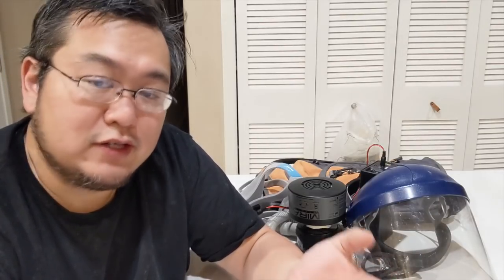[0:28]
Hi, my name is Johnny Lee, and a few days ago I posted a video about building a low-cost prototype ventilator. And I appreciate everyone's feedback that I've been able to talk to, who helped me learn a lot more about what's involved in mechanical ventilation. And I've updated the GitHub link with a lot of those learnings.
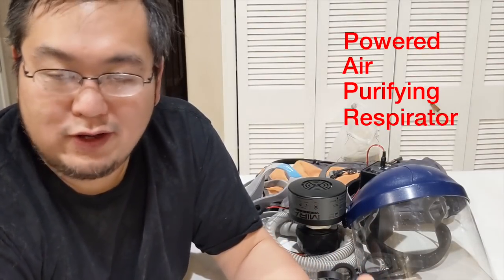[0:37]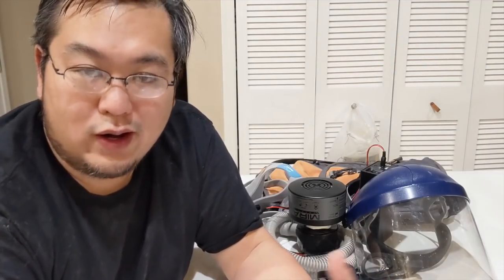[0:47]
While the efforts to make that project better continue, I wanted to share a different application of pretty much the exact same parts that could be useful right away, less risky, and potentially much, much more valuable than a mediocre ventilator. And that's to build what's called a powered air-purifying respirator, or PAPR. PAPRs are actually advanced pieces of personal protective equipment, or PPEs, that's designed to be worn by healthy individuals such as yourself or a caregiver.
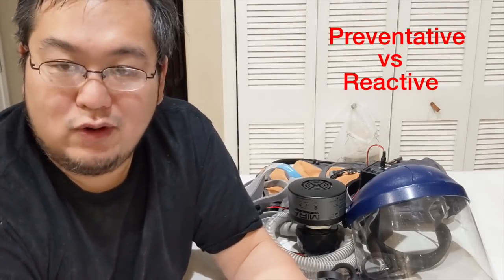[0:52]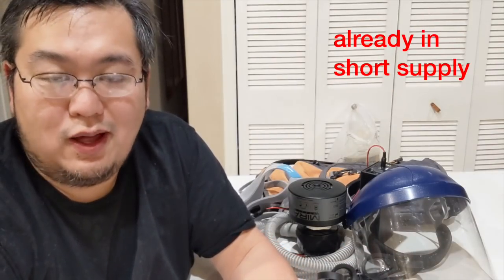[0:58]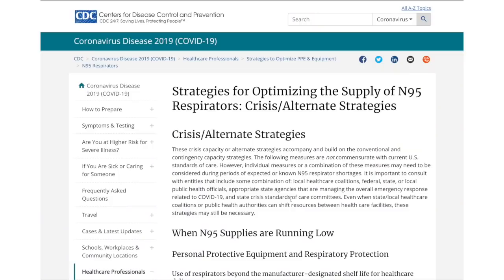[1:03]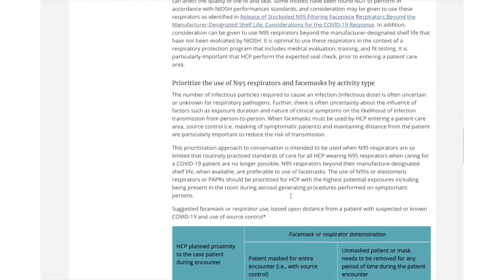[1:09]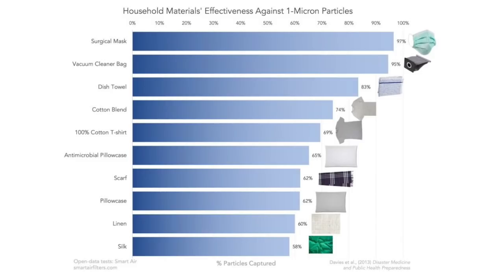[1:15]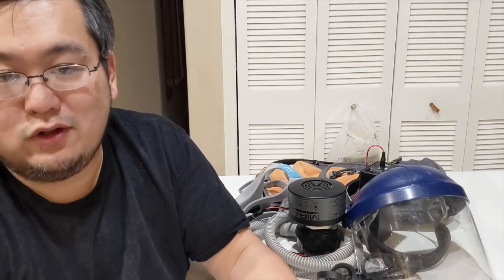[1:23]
PAPRs are actually preventative pieces of equipment rather than reactive ones, so we actually reduce the spread of the disease upfront. Protective equipment like this is already in short supply. We don't have to wait until hospitals are overrun with people needing ventilators. The CDC's website on crisis and alternate strategies for what to do when things like N95 masks run out references a study that talks about the effectiveness of materials like towels, t-shirts, and scarves on how well they act as a respirator. Ultimately, if you're able to help a caregiver heal 10 people that they otherwise couldn't treat, you'd have a much higher level of impact over people's lives than building a mediocre ventilator for just one person.
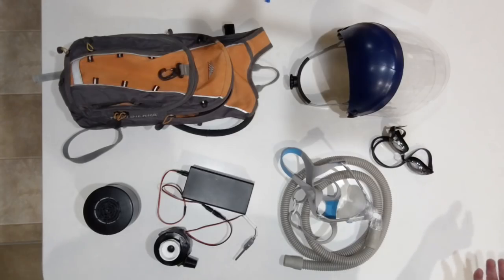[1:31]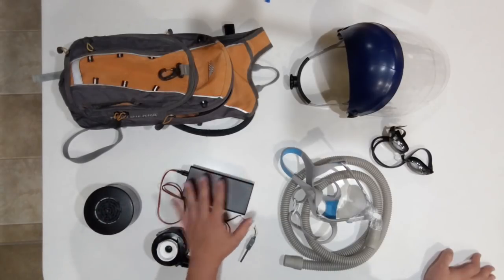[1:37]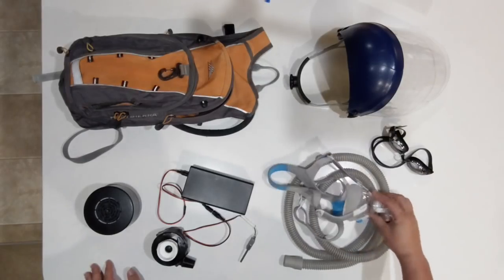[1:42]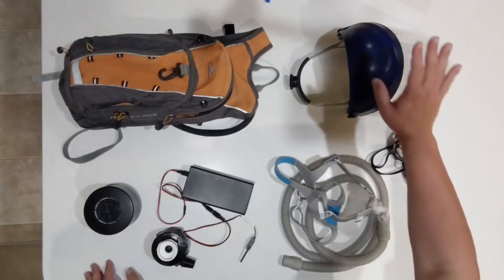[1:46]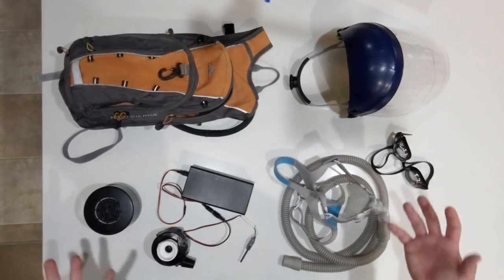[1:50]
These are the components I'm using for the DIY PAPR. This is a blower from the ventilator project. This is an air filter, a battery for the blower, a full face mask from a CPAP with its breathing tube, a pair of swimming goggles for eye protection, a face shield, and a backpack to carry everything so I can have my hands free.
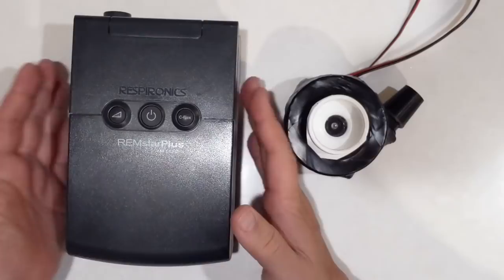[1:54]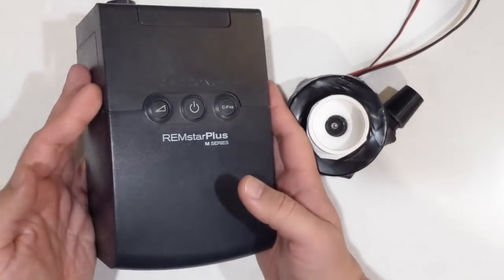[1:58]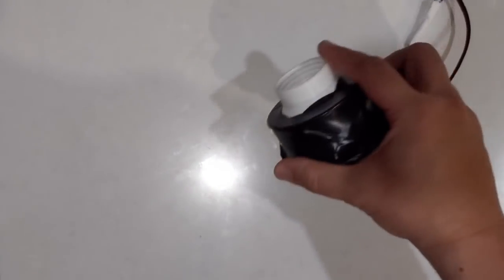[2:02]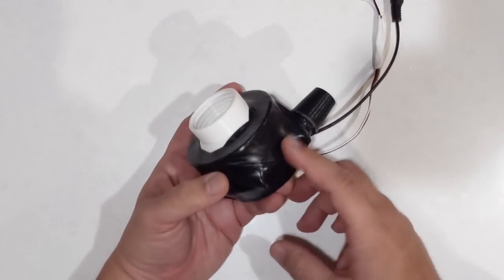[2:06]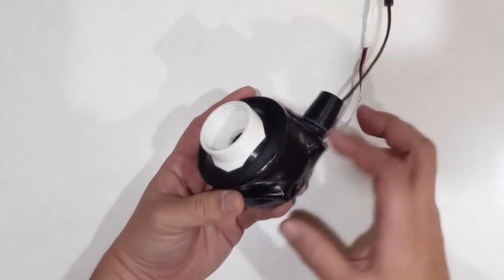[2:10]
The blower, as I mentioned in the previous video, is just from inside an old CPAP that I had. And CPAPs are pretty common devices used by people to treat sleep apnea. And it turns out the blowers are simply just brushless DC motors that can be easily driven by an Arduino Mini and an electronic speed controller commonly used in quad rotors and RC cars.
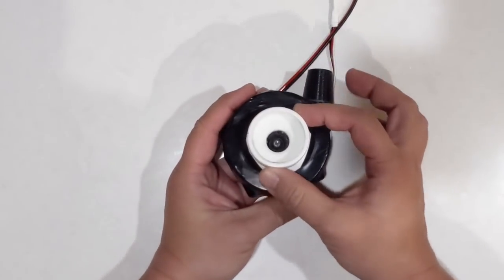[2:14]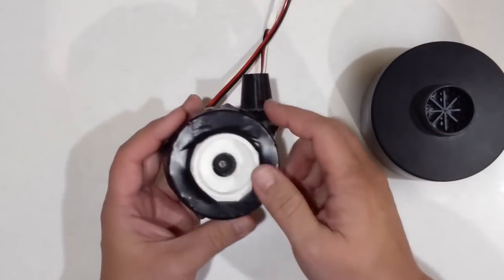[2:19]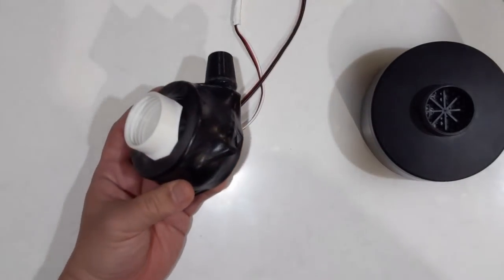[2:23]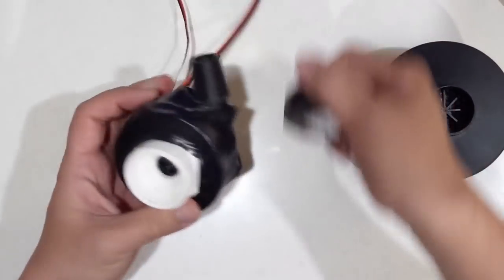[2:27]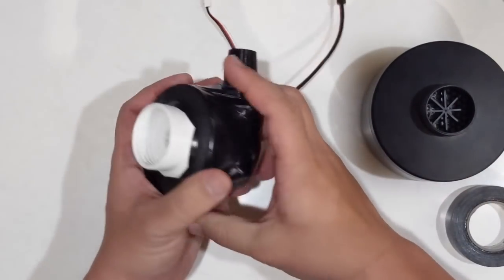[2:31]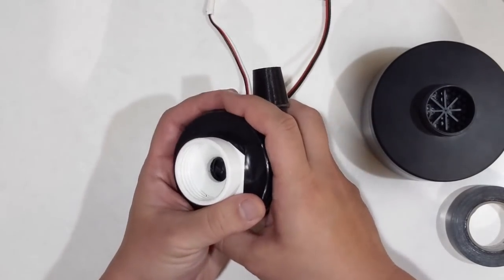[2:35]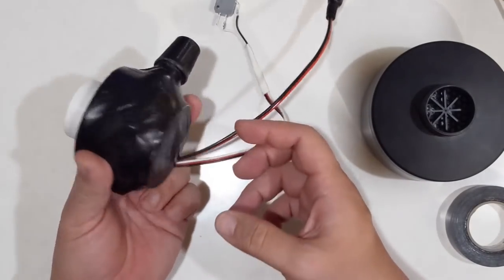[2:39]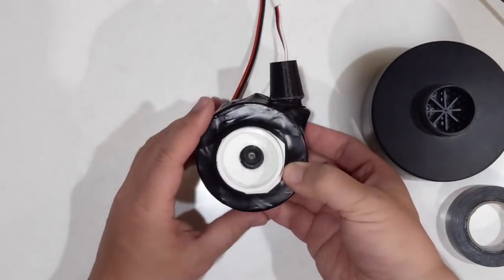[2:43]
This white part is a 3D printed air filter adapter, and the way I attach this adapter to the blower and motor and wrapped up all the electronics is I just used a whole bunch of electrical tape. In one continuous strip, I wrapped it kind of like a ball of twine. And that's to try to make an airtight seal so there's no external air that gets into the blower that doesn't come through the air filter. It's not perfect, but it's actually a pretty good airtight seal and seems pretty functional.
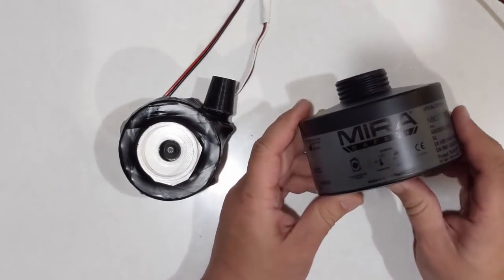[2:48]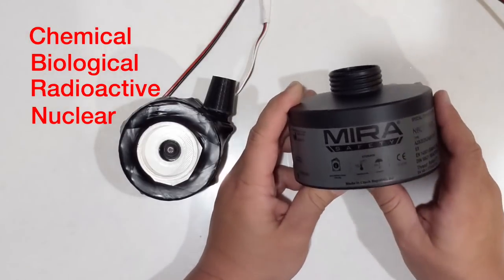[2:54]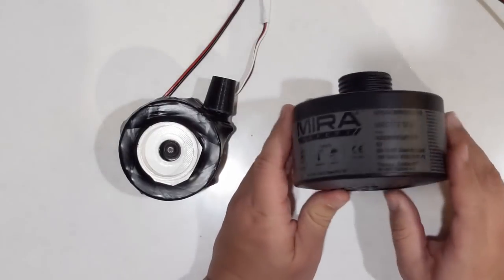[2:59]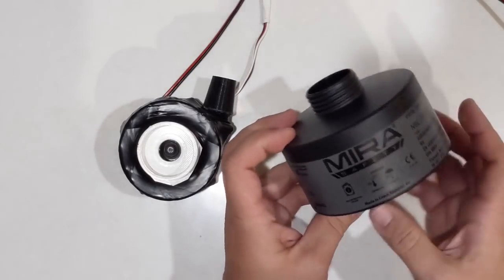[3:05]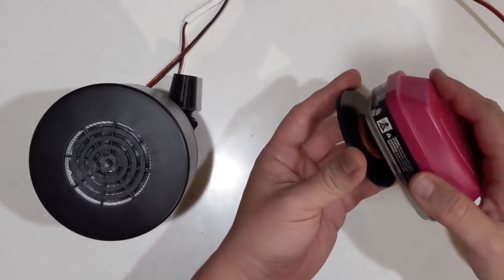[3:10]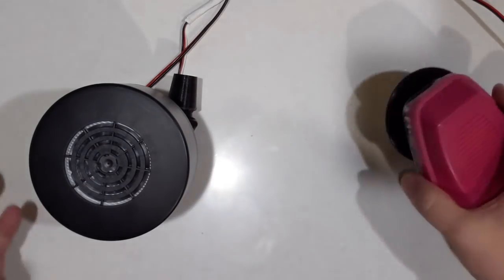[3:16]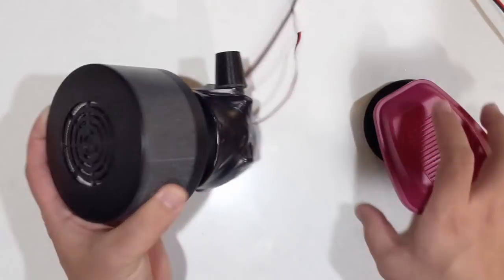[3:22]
This particular filter is what's called a CBRN rated air filter. And CBRN stands for chemical, biological, radioactive, and nuclear particle filtration. I'm really happy we don't have to use the chemical, radioactive, and nuclear capabilities of this filter. But the biological rating does help with airborne virus filtration. I also have this adapter, which is just for a standard 3M N95 or P100 face mask filter cartridge. And this can also be attached to the blower. I have a lot more detail on the GitHub link in the description on how this motor was put together, as well as the 3D models for both of these filter adapters.
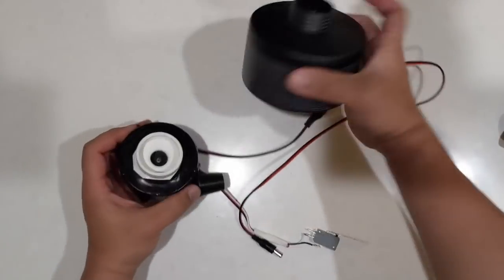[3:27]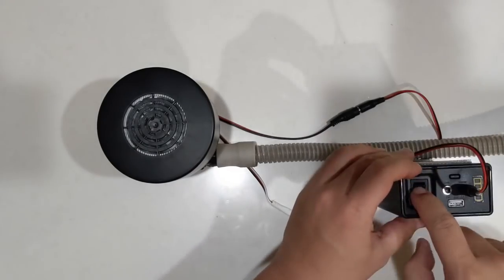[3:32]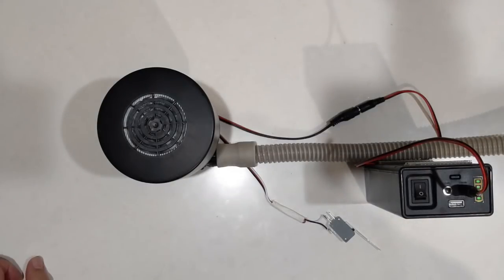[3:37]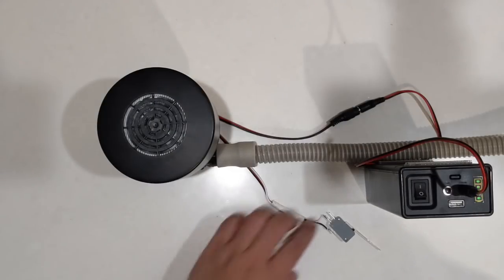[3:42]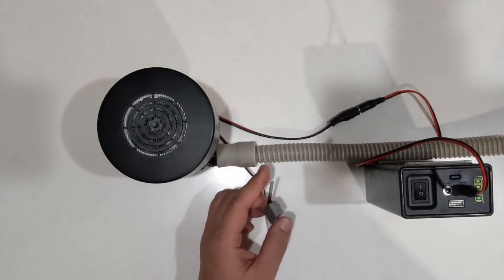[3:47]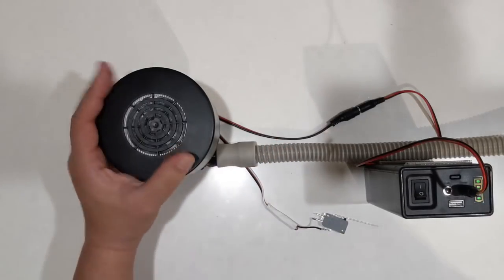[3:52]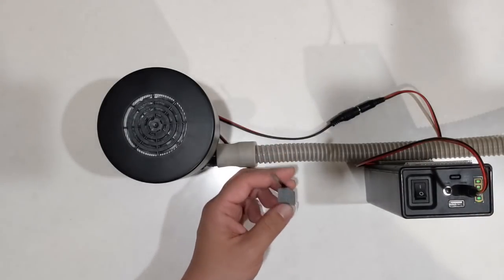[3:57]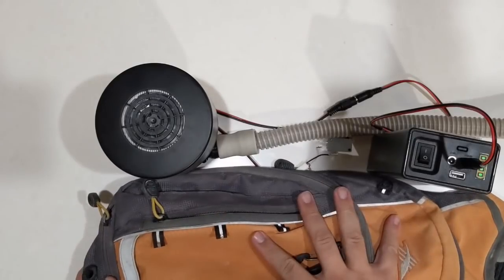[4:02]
To put it together, I just screw in the air filter, plug in the breathing hose, plug in the battery, turn it on. Just as before, it goes through a basic boot up sequence and begins pumping at a constant pressure. I can use this toggle switch to increase the pressure or increase the flow to whatever comfort level is good for breathing. The filter is going to drag on the actual flow, so you may have to run it at a higher rate than just the lowest setting. Once this is all in a good state, you can just put it into a backpack for easy carrying.
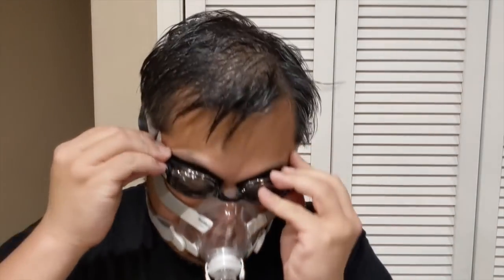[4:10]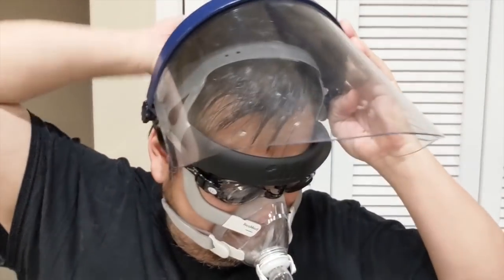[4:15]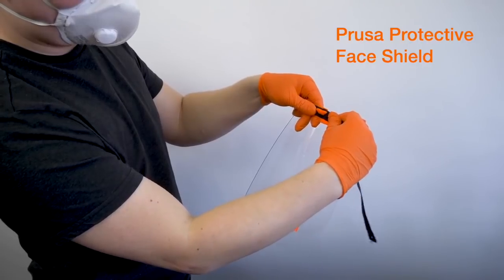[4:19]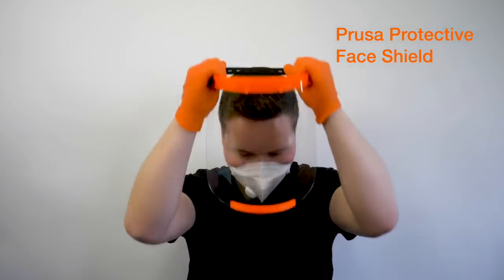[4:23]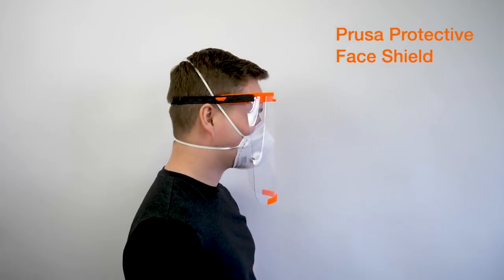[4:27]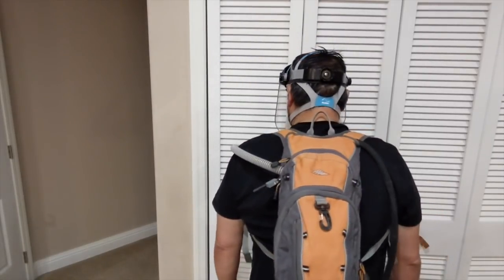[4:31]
First, I put on the CPAP mask, which covers my mouth and nose. Then I put on a pair of prescription strength swimming goggles so I can see without my glasses. And then finally, a face shield to protect from liquids that might be splashing up. If you don't happen to have a face shield, there's 3D printable models online that you can download. There's a small community of people that are starting to print these out in case they're needed in an emergency.
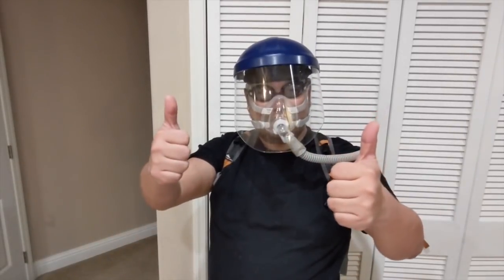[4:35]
Once you put it all together with the backpack and the face protection, you have a fully functional powered air purifying respirator. As I mentioned earlier in the video, this is a much simpler and much less risky project than trying to build a ventilator, which is a complicated project. And it's useful today. You can use it to protect yourself from getting sick and potentially even help a caregiver in case they run out of proper materials.